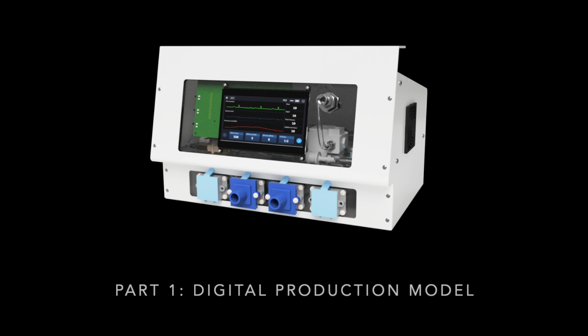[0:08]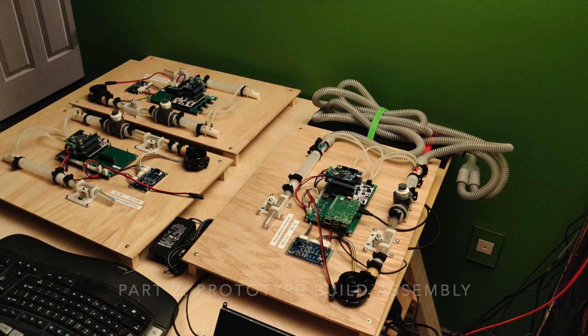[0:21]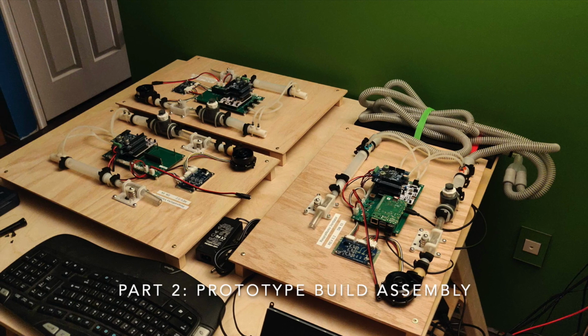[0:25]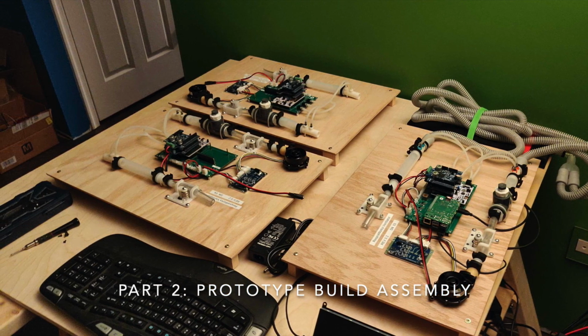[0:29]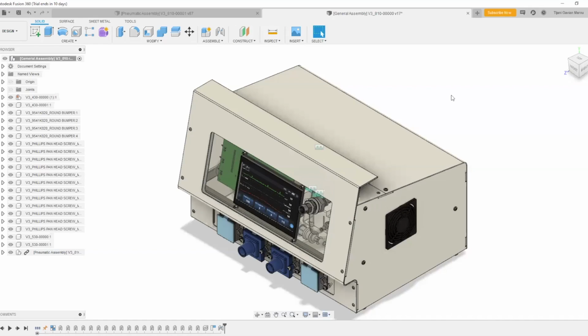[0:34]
In this video, we'll first be walking through a digital model of the production ventilator assembly, which is the complete package that we'd expect to put in a hospital environment. In this part, Tajani will explain some of the assembly and packaging considerations. Then, we'll walk through the assembly of a development prototype, which contains all of the functional components in a layout that's easy to work with, which we use to allow our distributed development team to work on building controls for the device. Our design philosophy was centered on ease of assembly, installation, and maintenance.
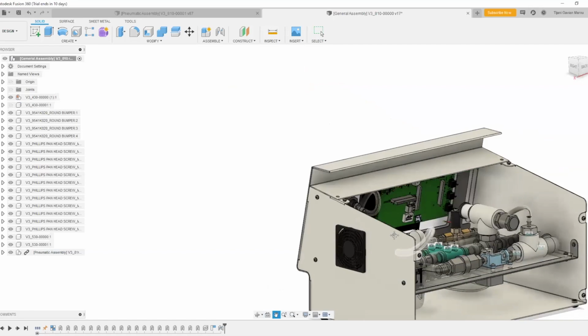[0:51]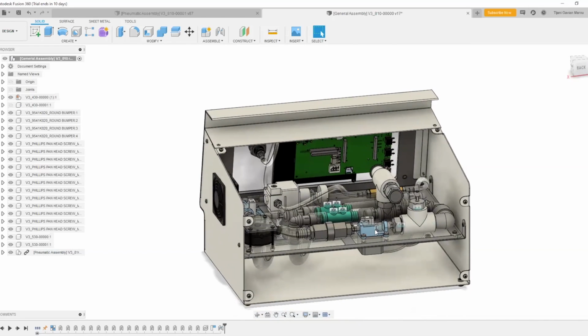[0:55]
We wanted the ventilator to be as modular as possible. All of the ventilator's internals are mounted to a frame that can be removed as one piece. In fact, the entire functional unit can be assembled outside of the enclosure. The enclosure was also designed around maintenance, with removable panels allowing access from all sides. The internal assembly can be seen here.
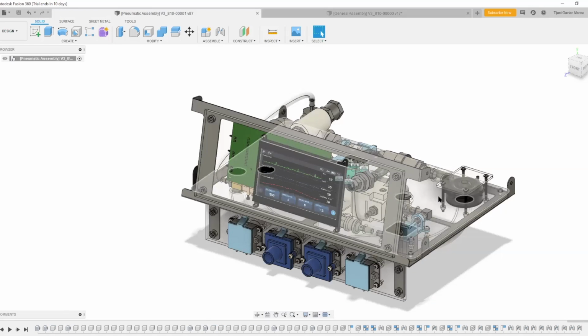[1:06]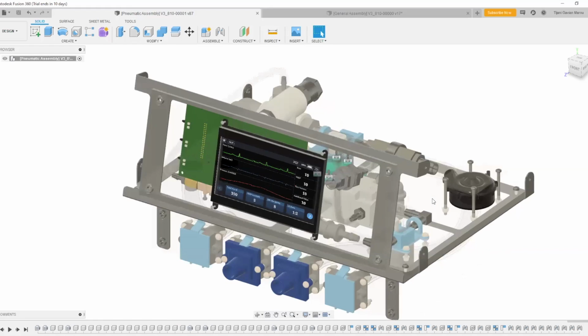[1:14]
The internal assembly was designed to be as simple and tidy as possible. Tubing was eliminated wherever possible and replaced with fittings. Clear acrylic supports components mounted to a sheet metal frame. This allows for higher visibility during assembly, as well as easy troubleshooting of moving components while enclosed. In this model, wiring and pressure measurement tubing are not shown for visibility.
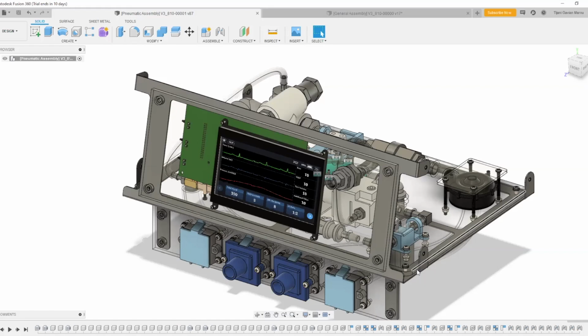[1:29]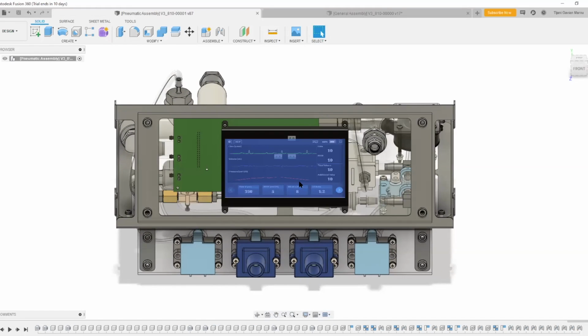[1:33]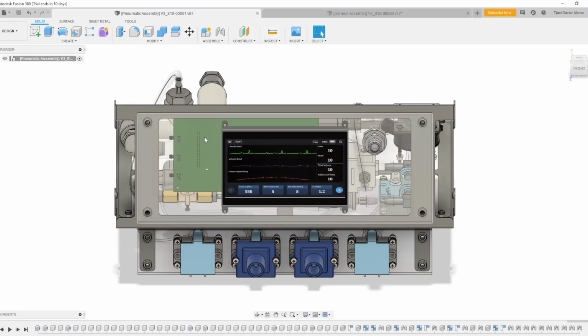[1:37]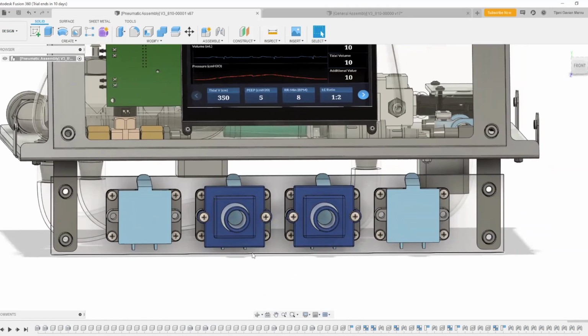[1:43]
The display screen and oxygen connections are located on the upper panel. The brains of the unit and motor stepper drivers mount to the back. The lower faceplate supports the filter and patient tubing connections. These are actually the same part, the only difference being the removal or addition of the patient adapter.
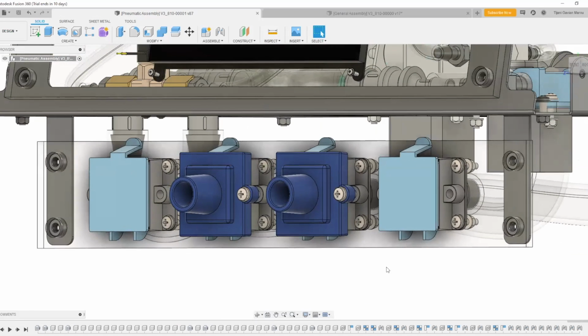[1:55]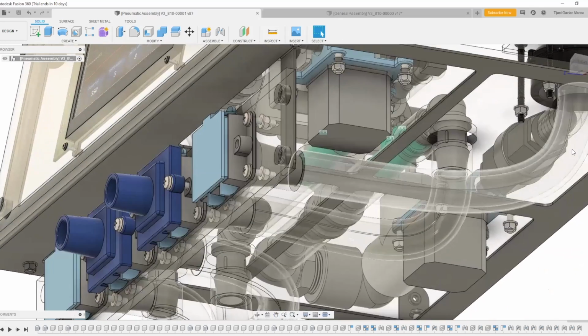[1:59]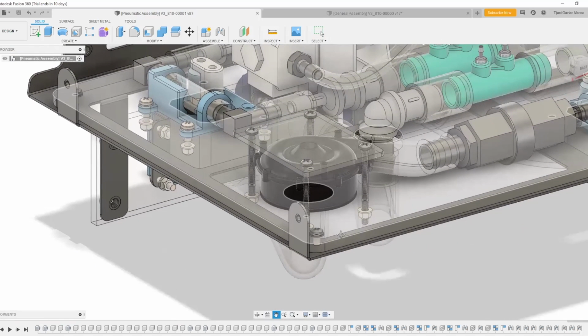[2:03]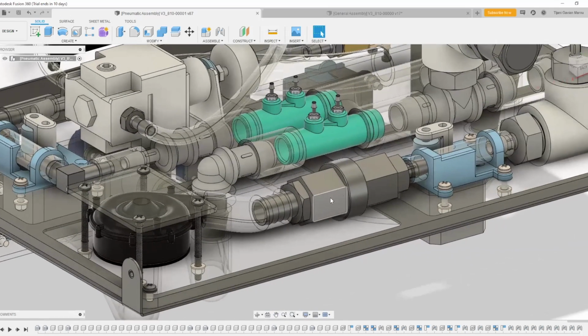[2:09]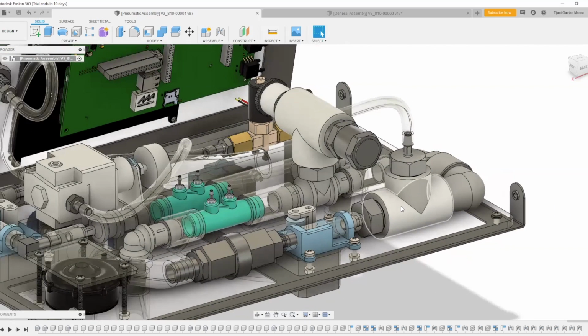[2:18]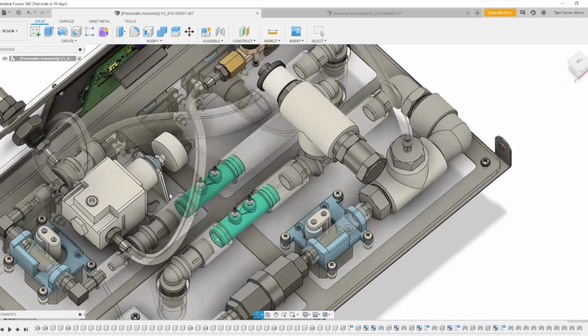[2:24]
Starting at the intake filter, flexible tubing routes air to the blower. The discharge air then travels through a check valve to prevent high-pressure O2 traveling back to the blower. Stepper-driven pinch valves control flow, which is then mixed with O2 in the mixing tee. The supplied O2 can be regulated through our regulator, if necessary, and is controlled by a proportional solenoid before mixing. An oxygen sensor feeds the control board information, and a pressure relief valve is here for safety.
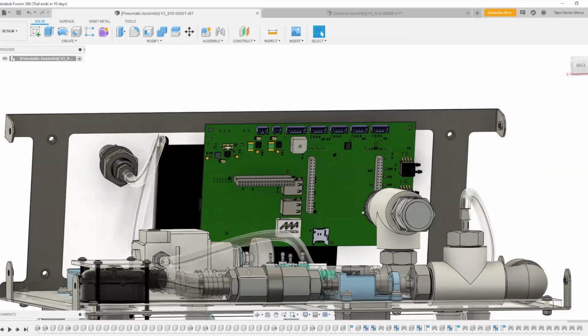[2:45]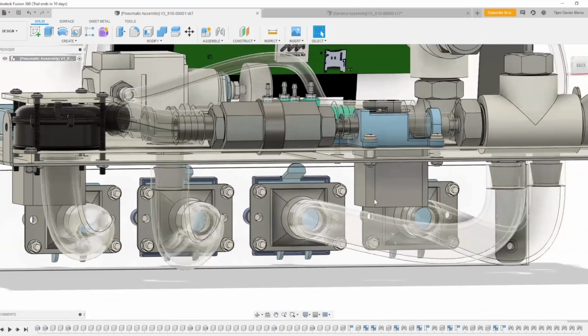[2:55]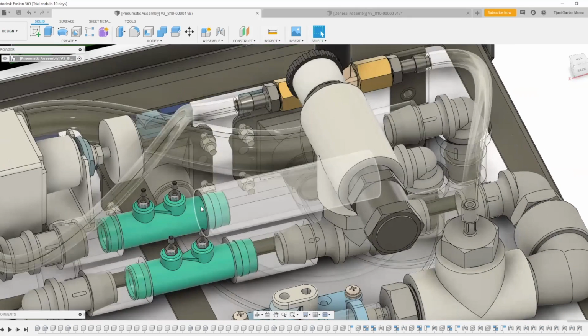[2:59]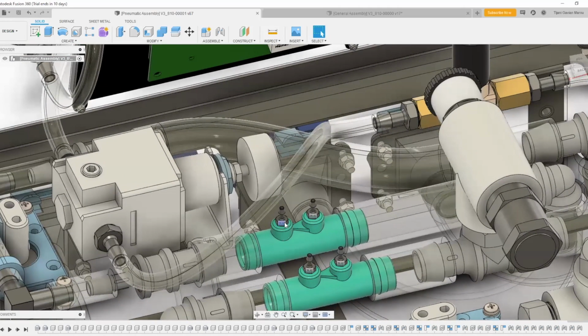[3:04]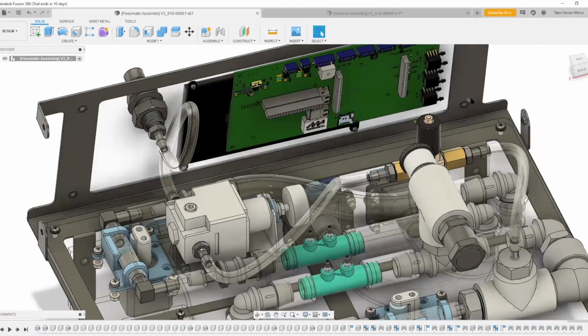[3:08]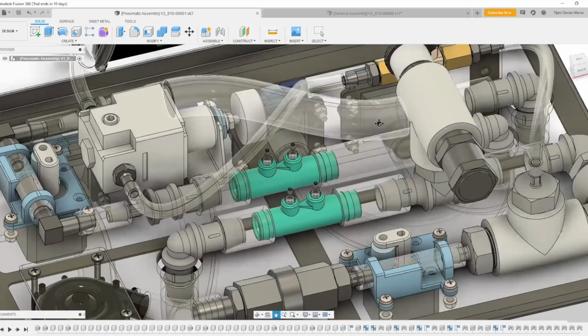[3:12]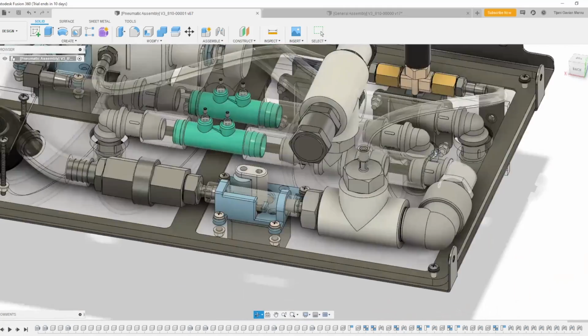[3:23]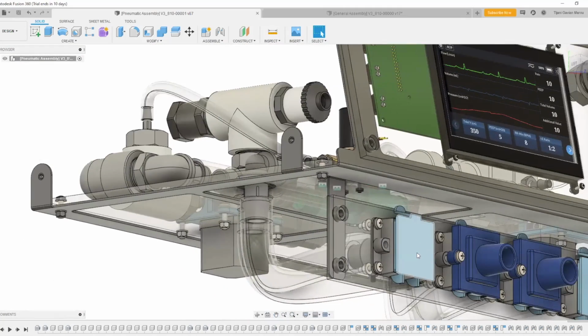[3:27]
The air-O2 mix then passes through a Venturi flow meter before exiting the ventilator through the inhalation connection. Exhaled air from the patient returns through the exhalation connection, comes up to the top of the board, and through another Venturi flow meter for measurement. The pressure tubing for the Venturi flow meters mounts to these barbs here and connects to the circuit barb up here. After the Venturi, the air passes through another control valve before exiting through the exhalation filter here.
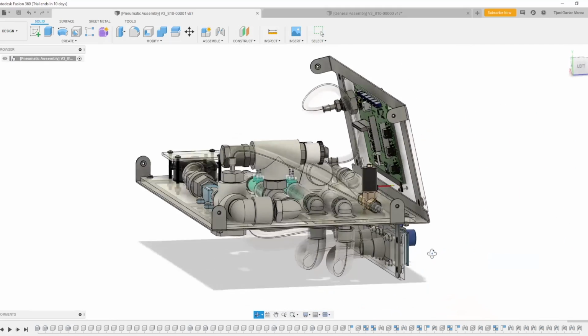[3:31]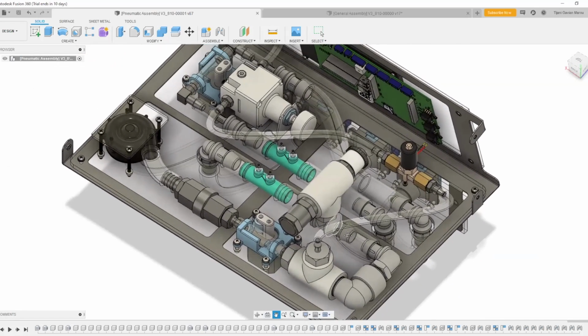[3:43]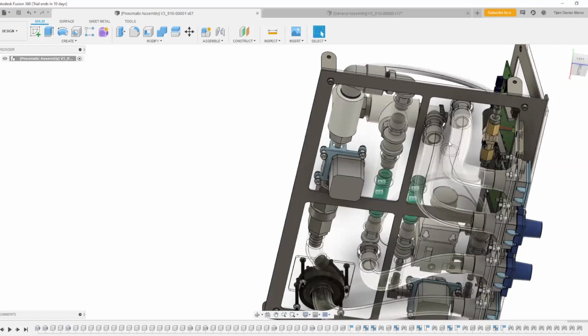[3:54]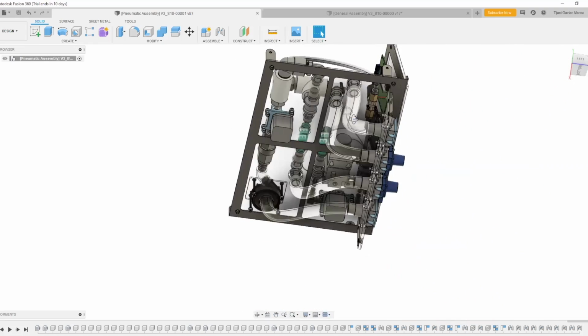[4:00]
The design philosophy behind separating the upper and lower decks of the mounting plate is centered around the idea that we wanted all of our components up above with as many fittings as possible, to reduce the amount of tube spaghetti, and also for visibility reasons. In case there's any issue, the operator can look through the faceplate to see if something has become disconnected or if a mechanical device is not operating properly. The lower deck was reserved simply for tubing, to not violate minimum bend radii and also allow for a somewhat neater interface.
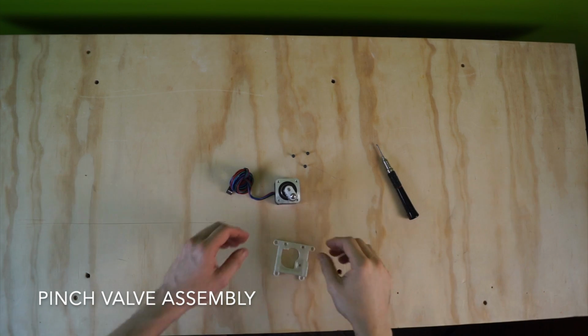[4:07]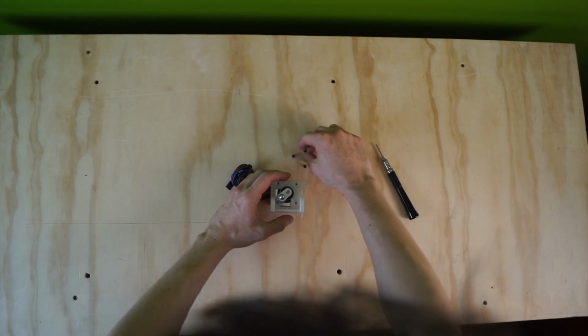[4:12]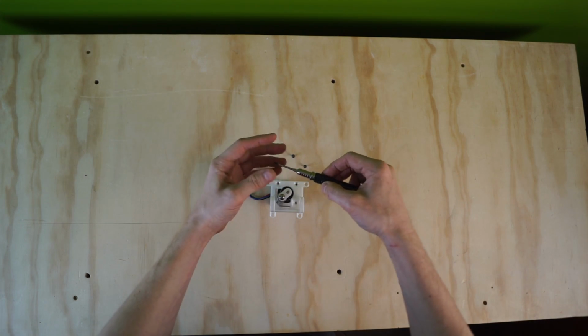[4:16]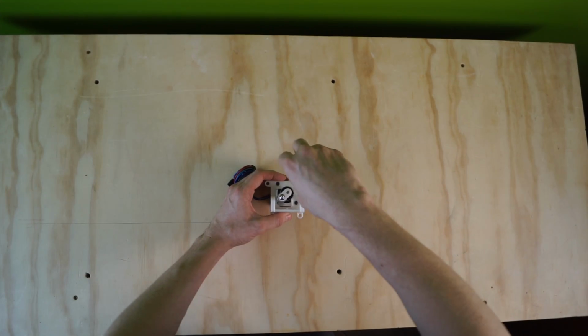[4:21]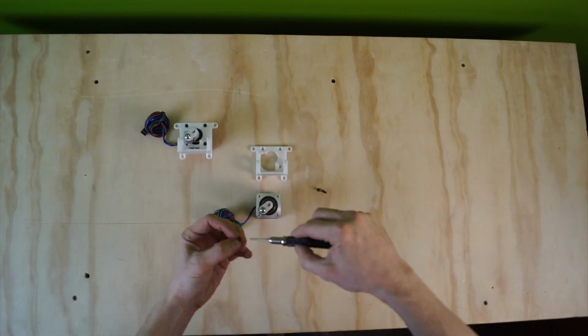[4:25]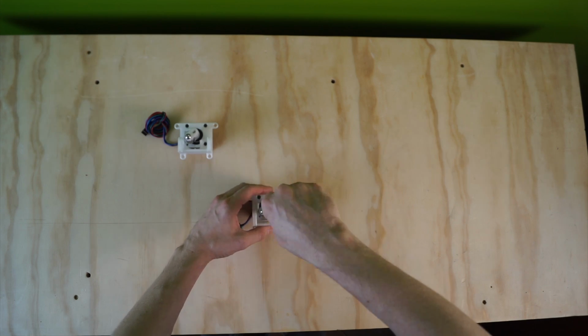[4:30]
This completes the demo of our production ventilator design. Next, Martin will walk us through the assembly of a development prototype ventilator. Documentation of this process is publicly available as part of our open source philosophy. We'll start with the assembly of the pinch valves from 3D printed components and off-the-shelf hardware. With this subassembly complete, we'll move on to the main ventilator pneumatic circuit.
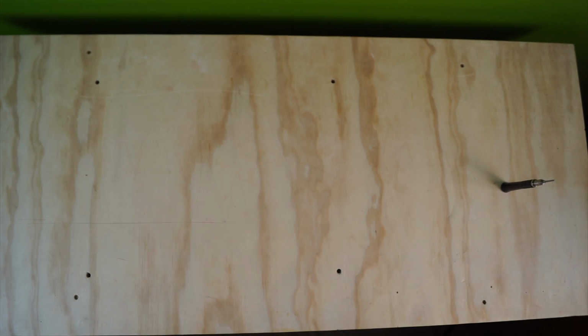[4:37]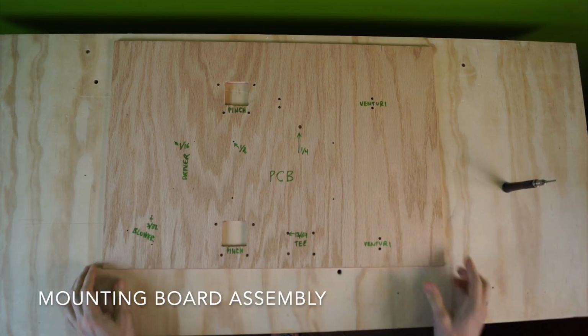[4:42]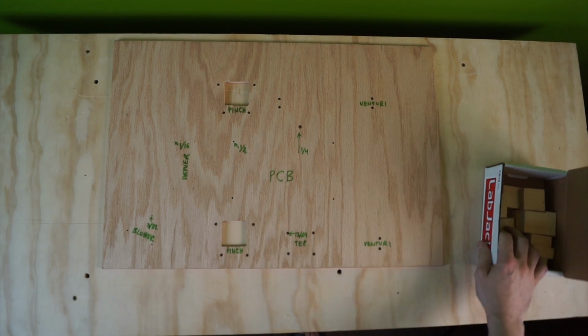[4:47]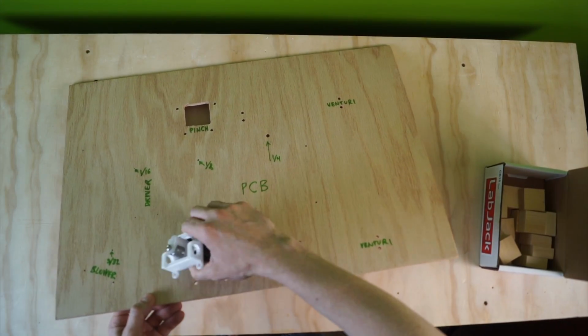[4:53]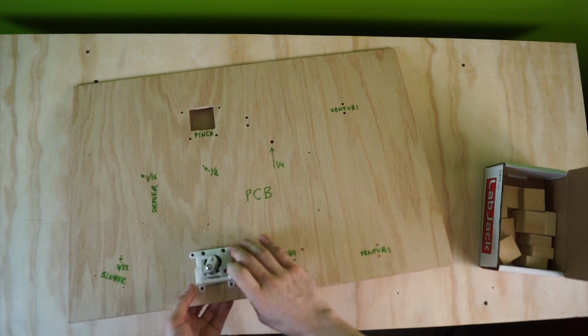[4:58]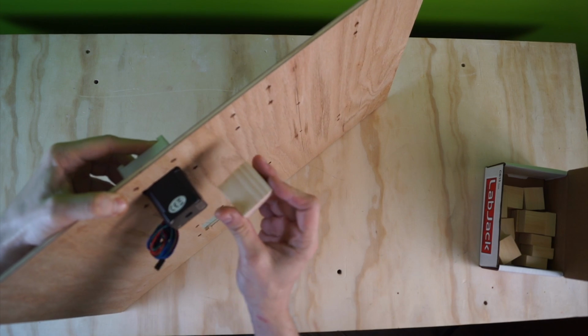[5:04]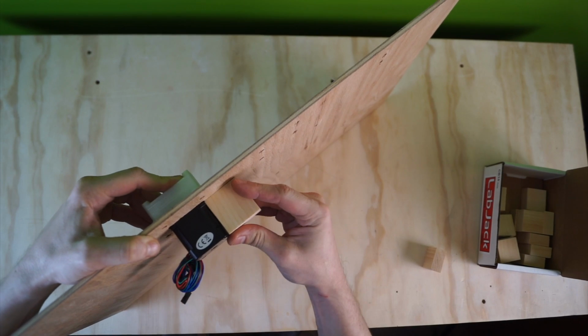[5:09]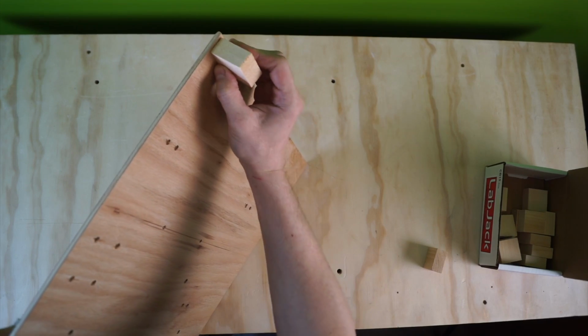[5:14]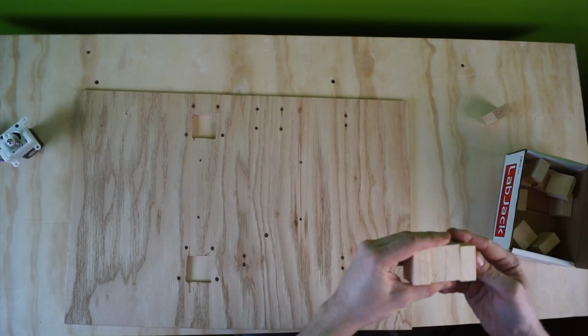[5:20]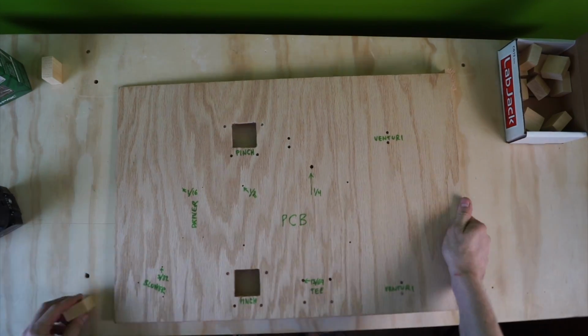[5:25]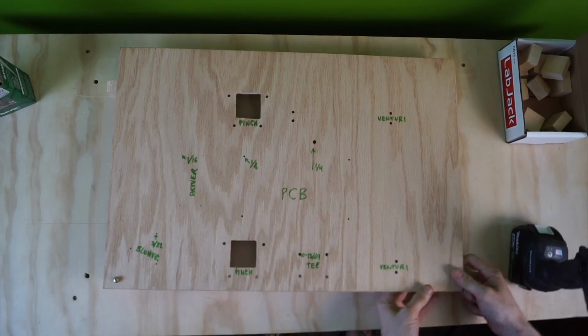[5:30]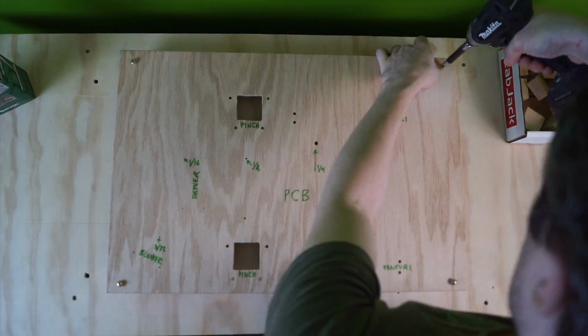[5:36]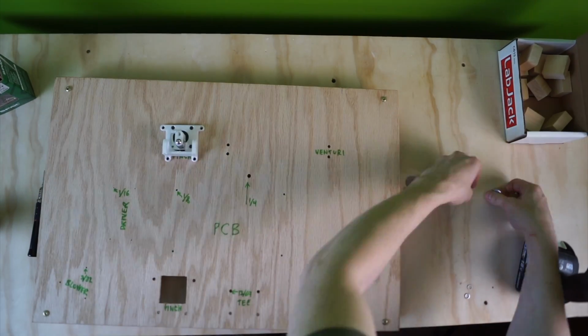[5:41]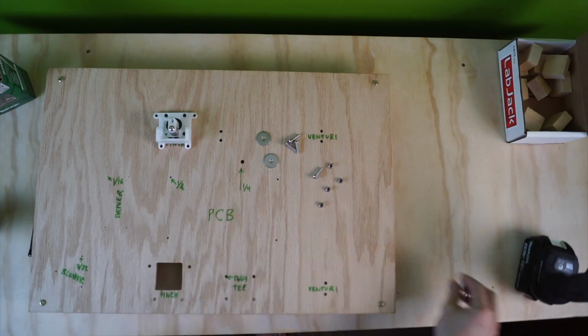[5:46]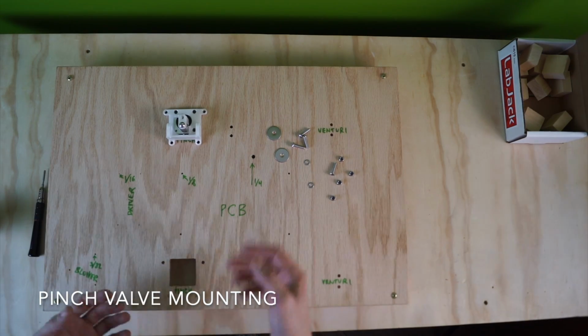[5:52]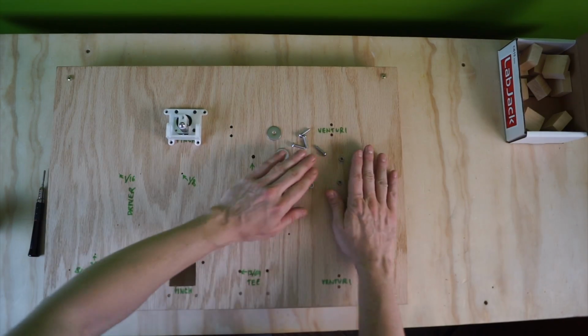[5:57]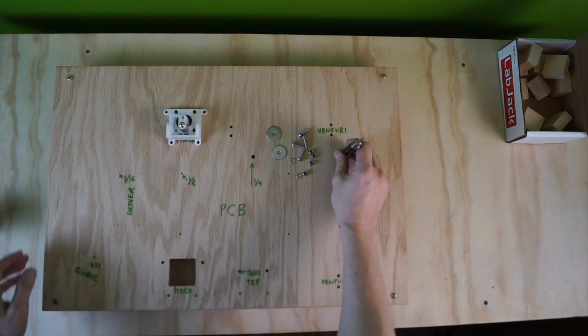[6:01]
So, the parts. Here's the parts. The tools. Here's the tools.
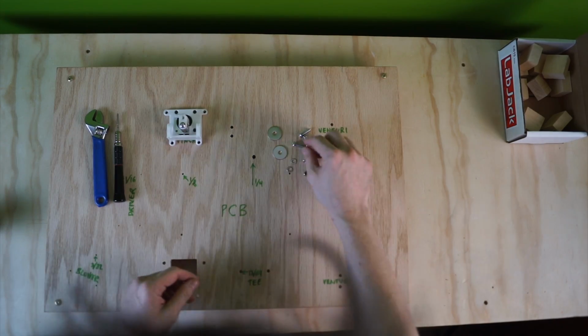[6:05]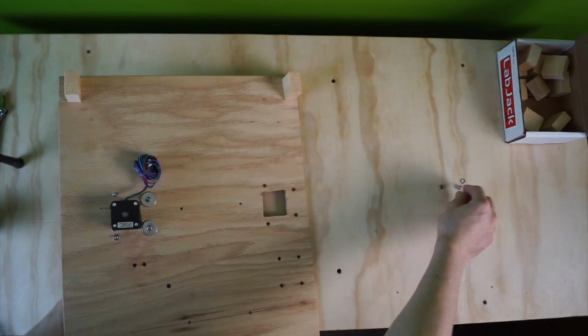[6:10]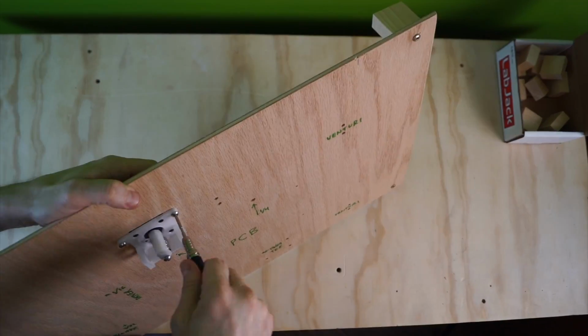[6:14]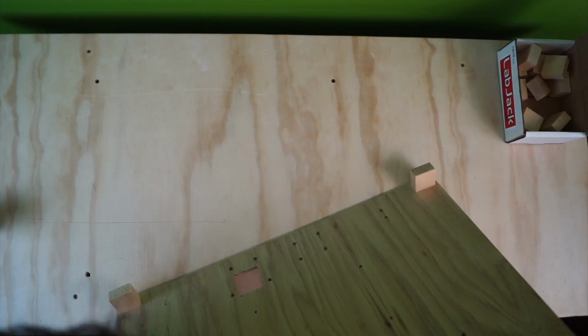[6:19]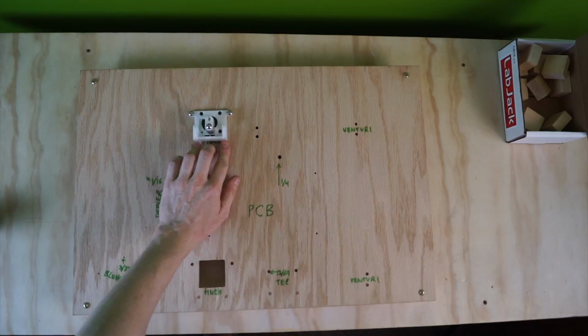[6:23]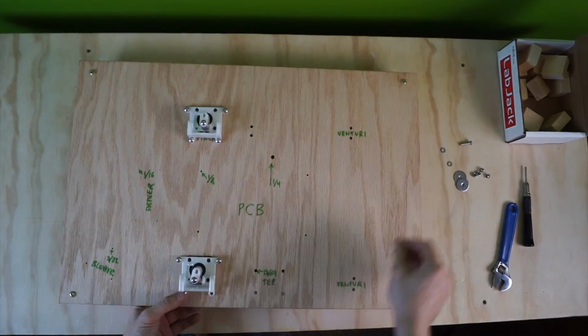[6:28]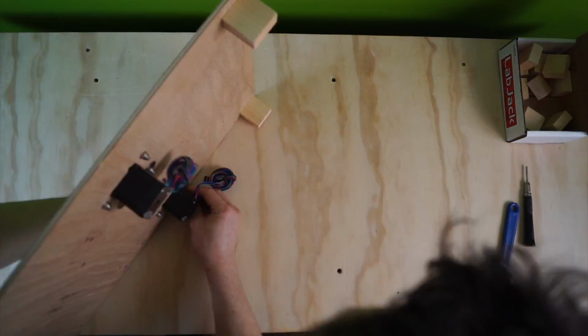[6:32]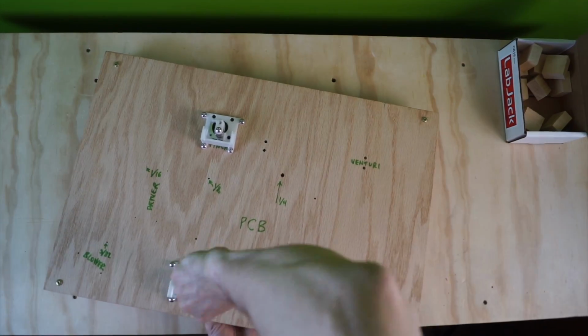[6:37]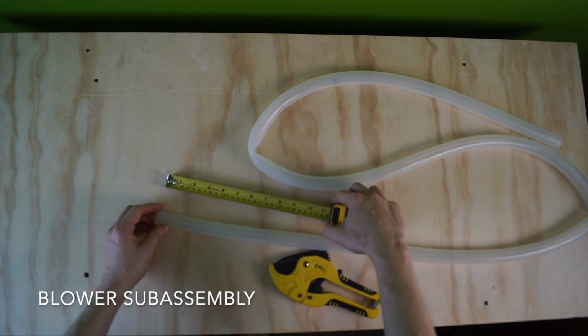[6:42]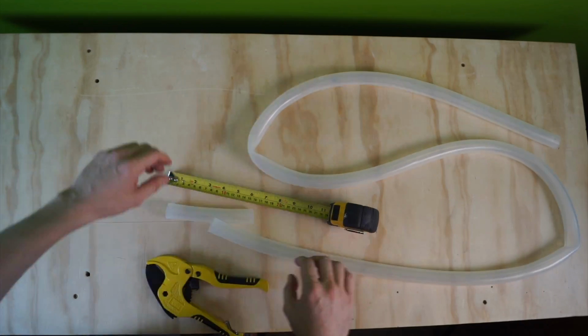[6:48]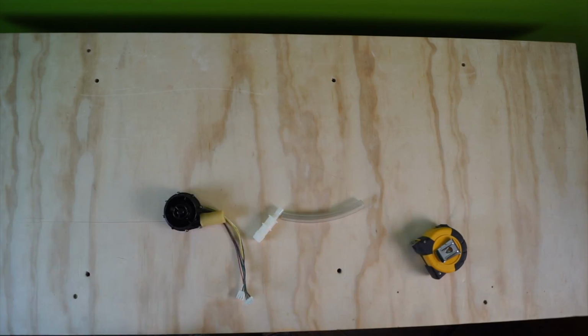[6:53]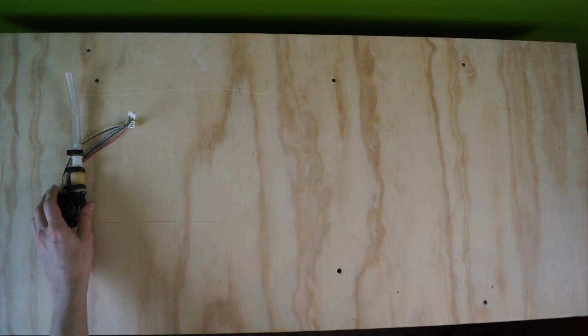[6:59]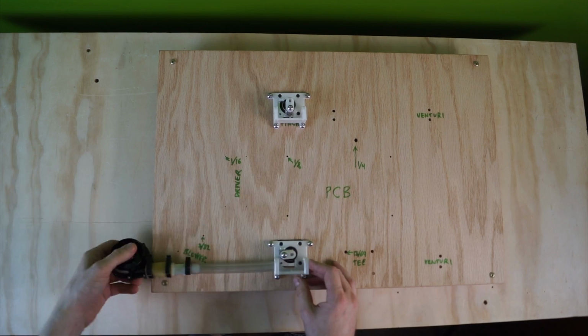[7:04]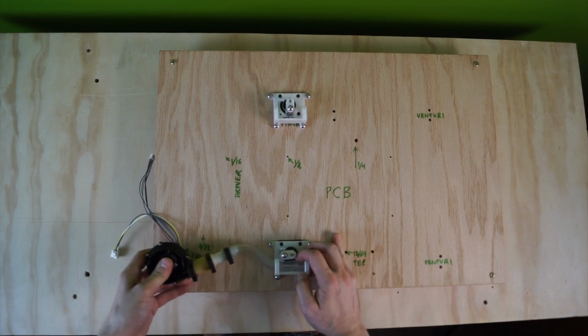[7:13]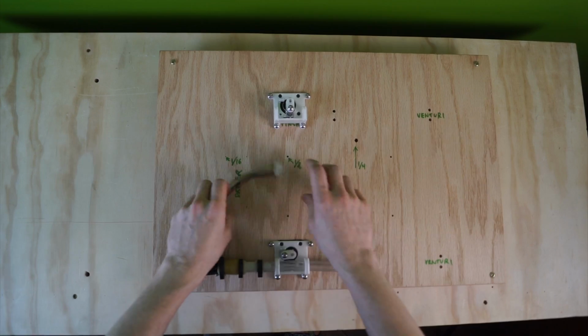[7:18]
The mounted pinch valves form the start of the pneumatic circuit. Next, we'll build the blower subassembly, which is the inlet to the pneumatic circuit. We have drilled these 3/32 holes here for attaching the blower.
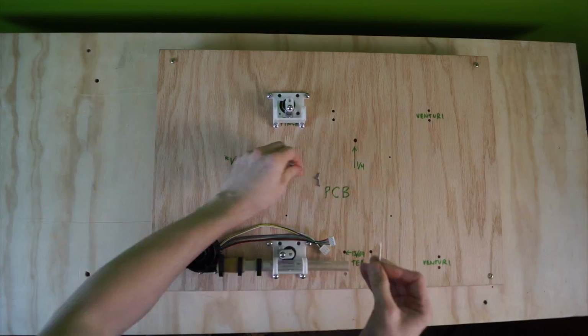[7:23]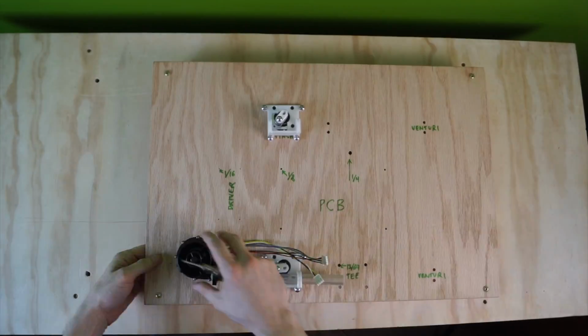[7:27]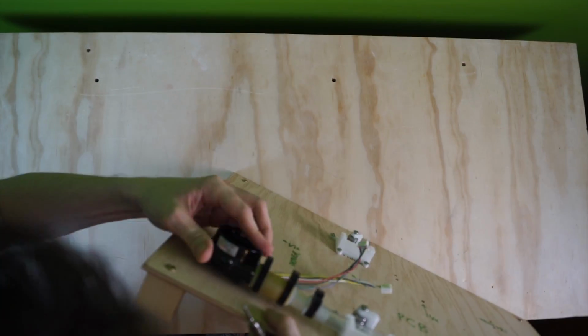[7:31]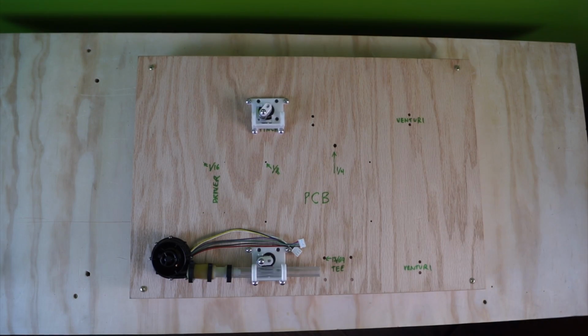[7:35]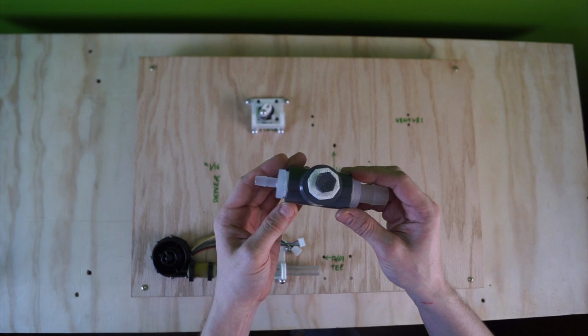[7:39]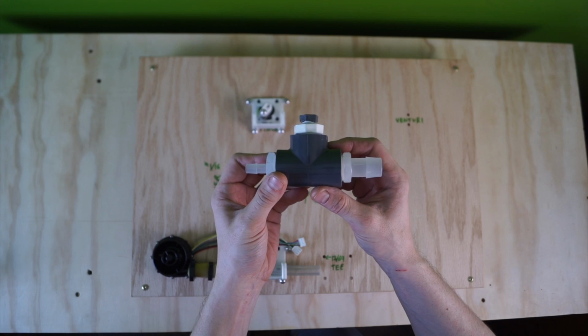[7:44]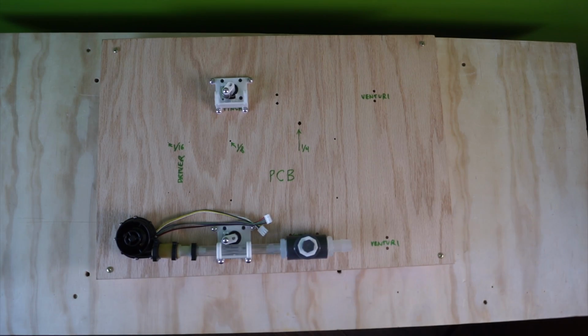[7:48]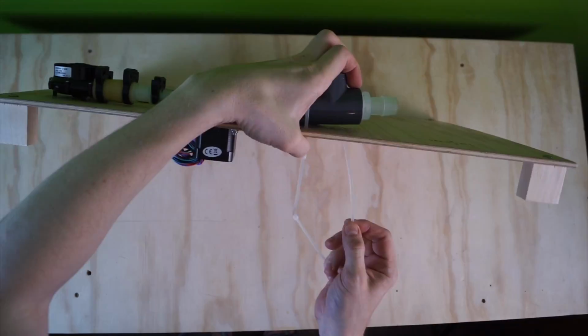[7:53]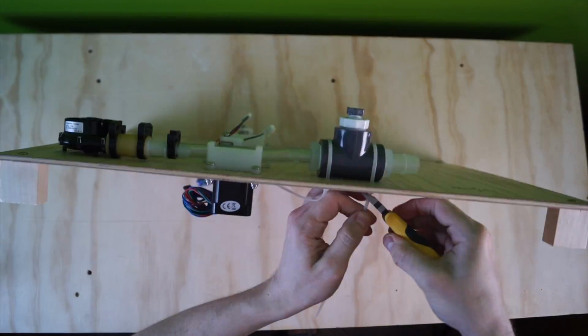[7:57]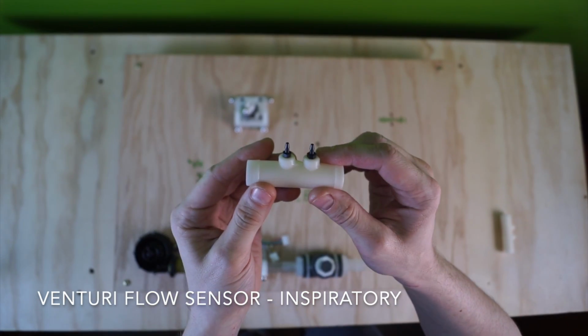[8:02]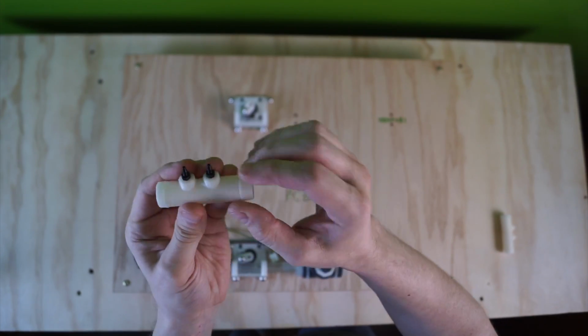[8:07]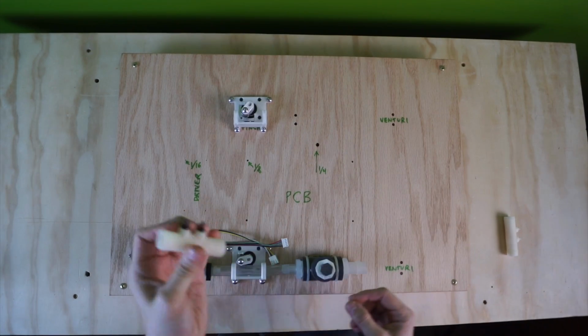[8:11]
Next, we add the T for an overpressure relief valve. In this demo, a plug fitting is standing in for the actual valve. The Venturi flow sensors are custom parts, which are 3D printed for these prototypes. They allow us to measure pressure drop and derive the flow rate through the orifice. That's where the tubes are going to connect.
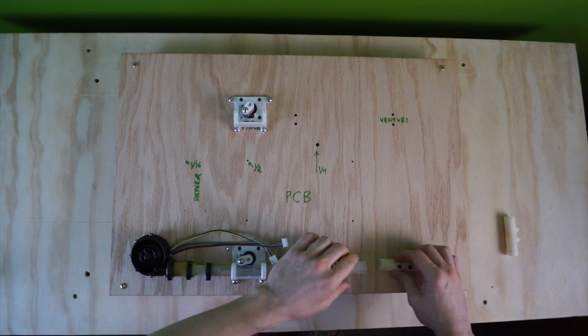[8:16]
Everything is tubes. The internet is tubes. It's just a series of tubes, man.
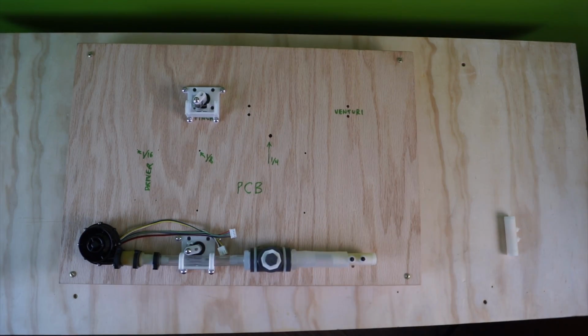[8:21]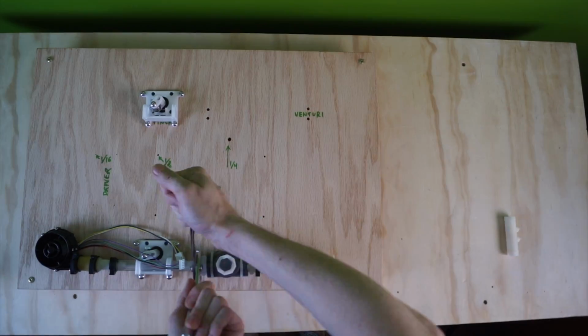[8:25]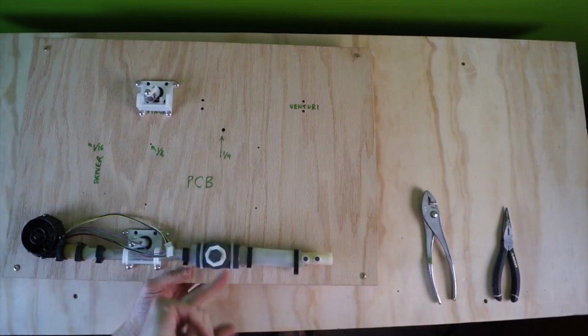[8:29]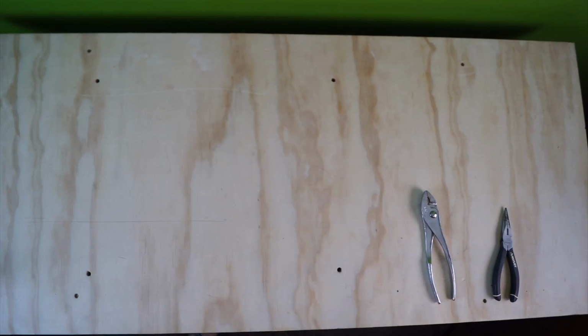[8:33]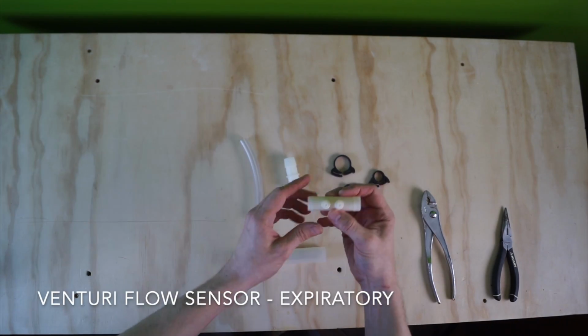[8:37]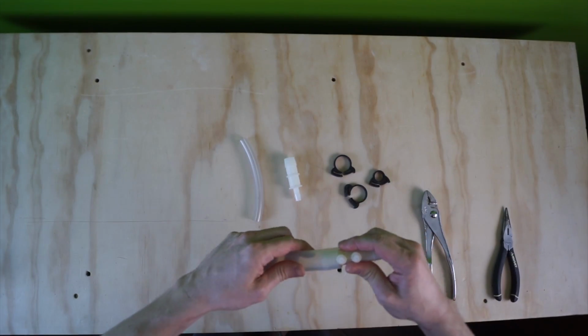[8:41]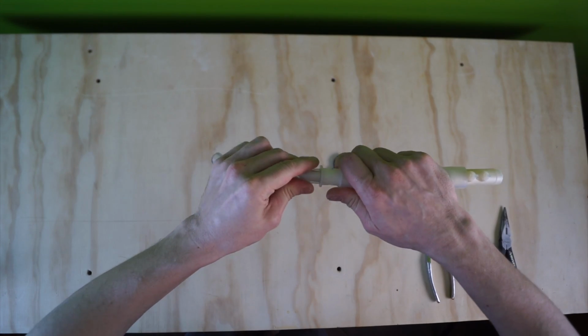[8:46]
We'll do the subassembly first. So Venturi comes in. Arrow is pointing that way. And that's the tubing for the second pinch valve.
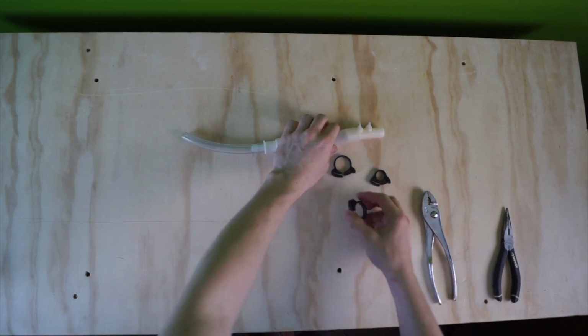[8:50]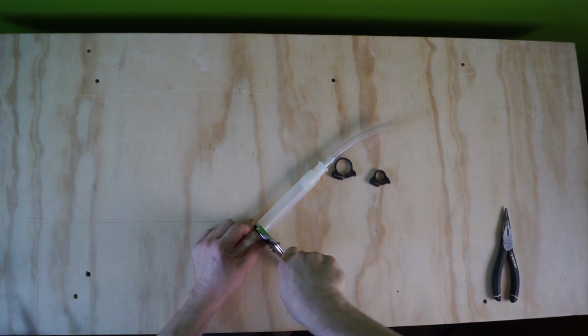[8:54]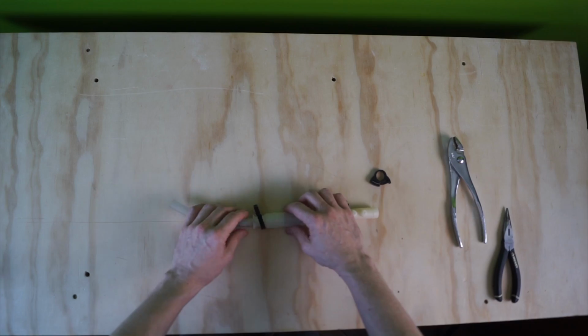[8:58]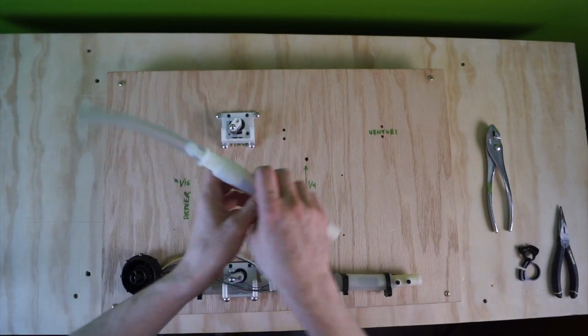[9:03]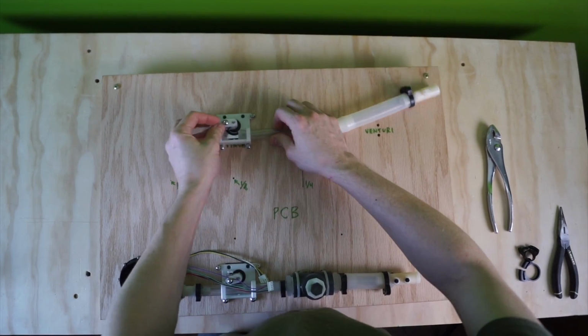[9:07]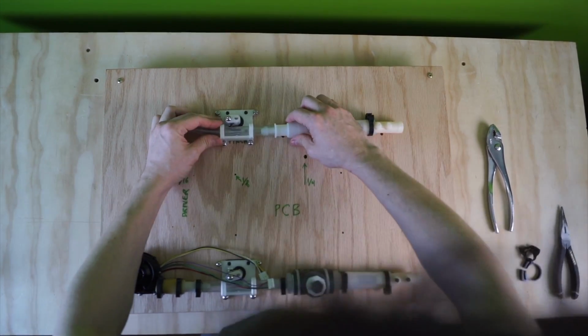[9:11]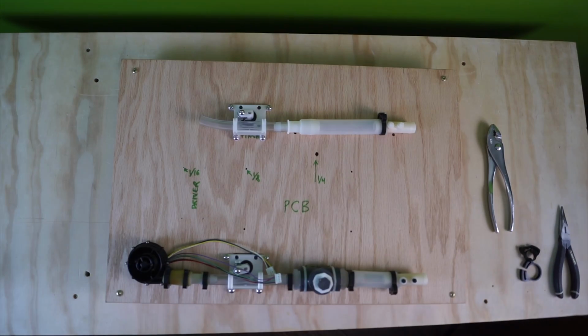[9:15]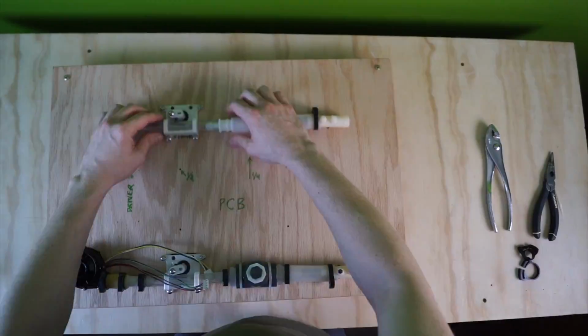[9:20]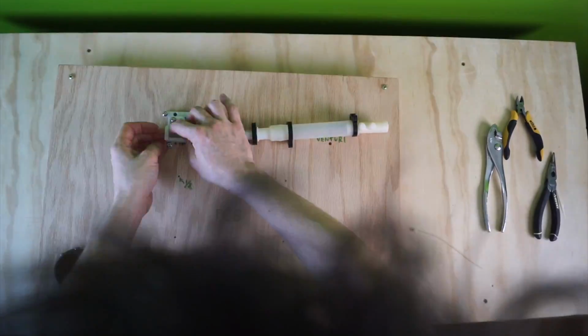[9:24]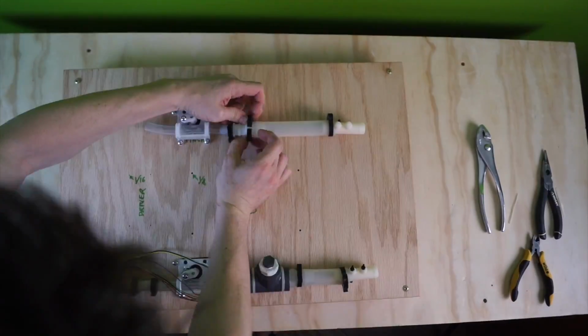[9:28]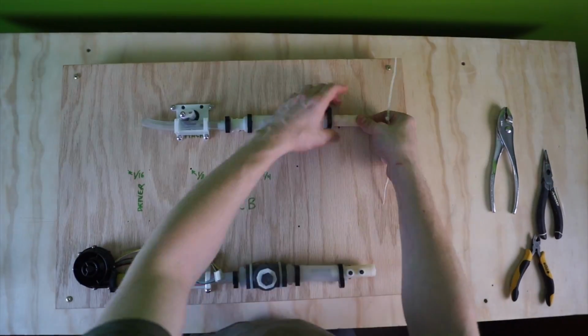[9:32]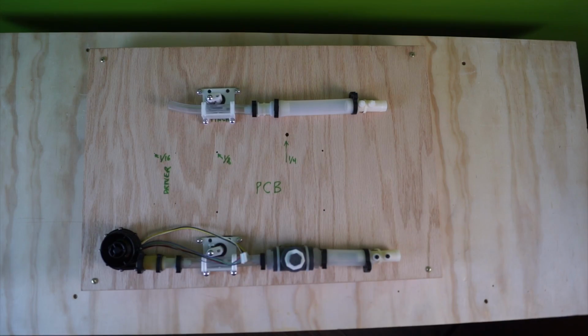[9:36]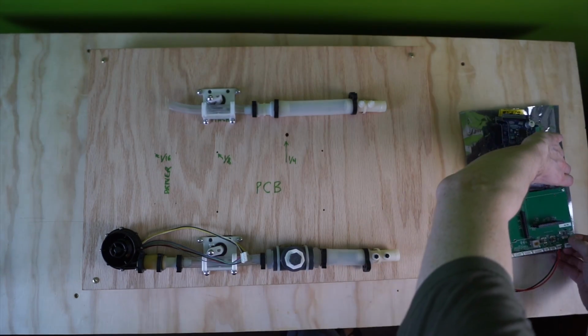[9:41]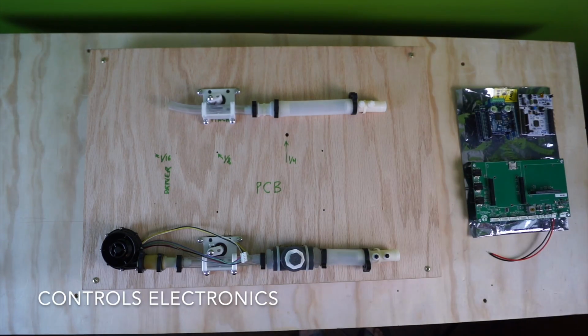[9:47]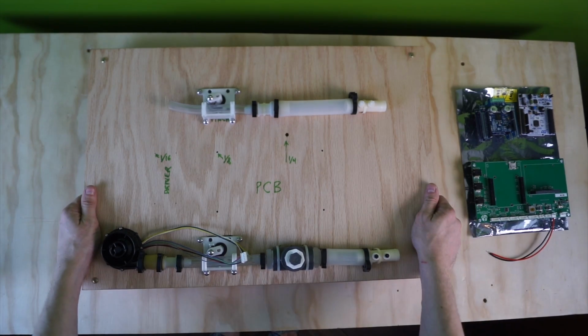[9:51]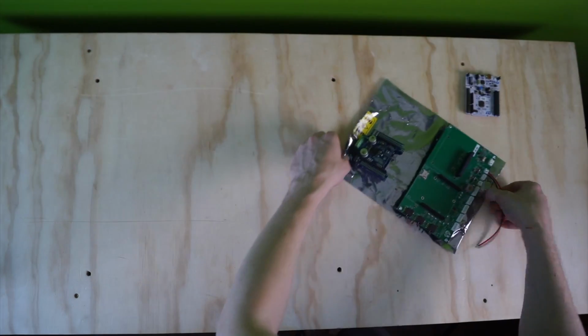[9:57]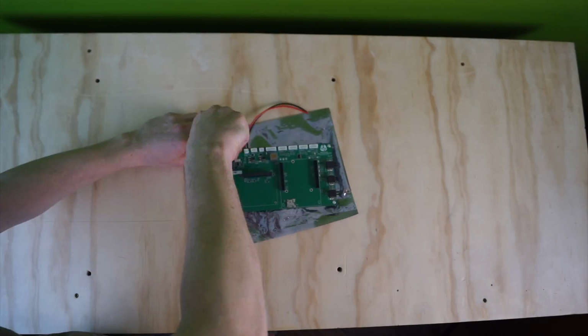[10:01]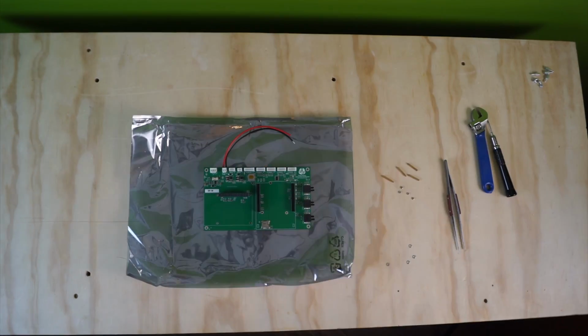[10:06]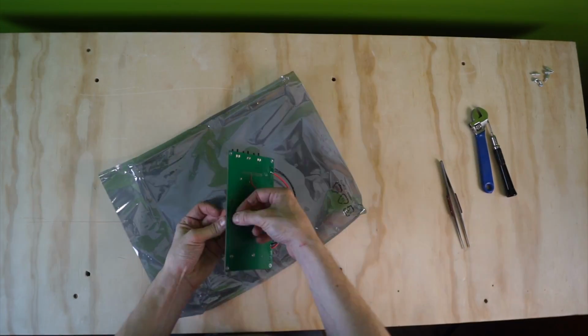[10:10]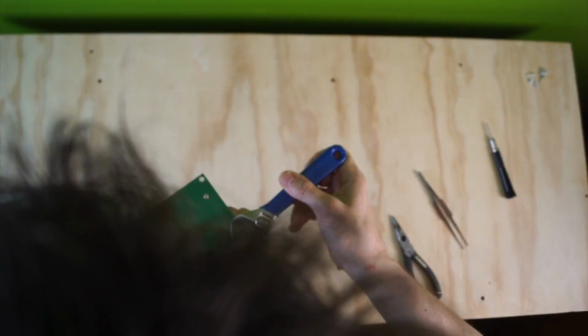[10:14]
Here's all the electronics, but we need to prepare them first. RespiraWorks has created a custom PCB to minimize production errors for the control system. Here, Martin is modifying its mounting for the development prototype. The board links the Nucleo controller, pinch valve stepper motor drivers, blower driver, sensor inputs, and touchscreen controller.
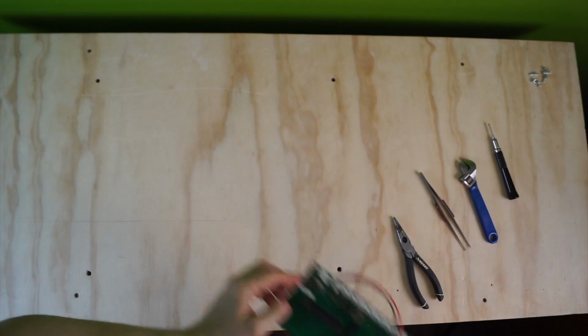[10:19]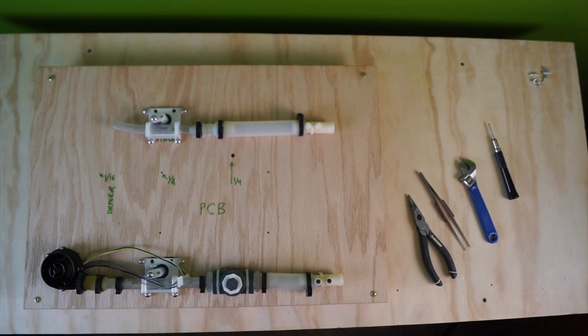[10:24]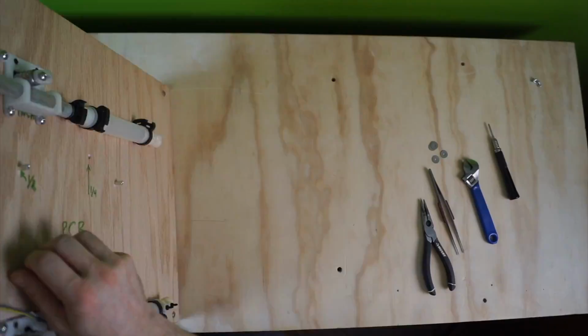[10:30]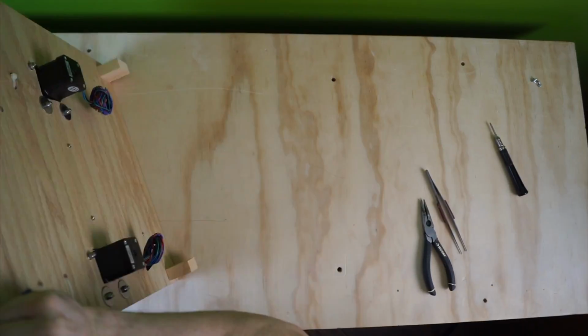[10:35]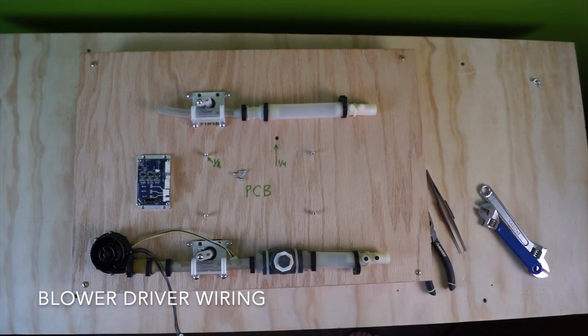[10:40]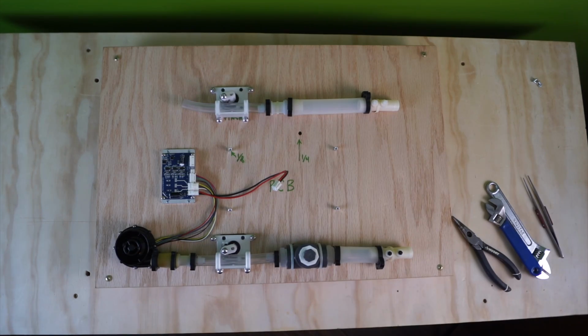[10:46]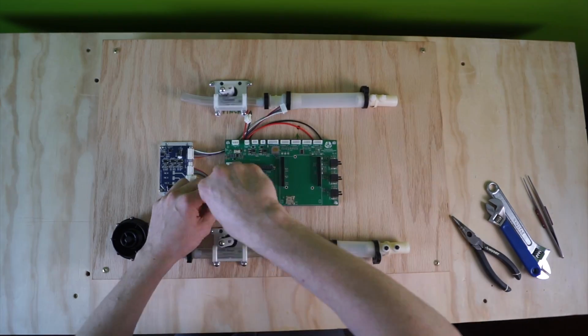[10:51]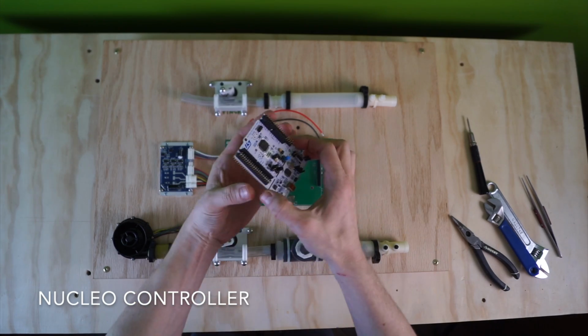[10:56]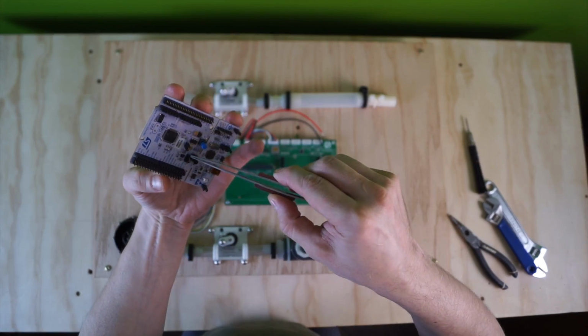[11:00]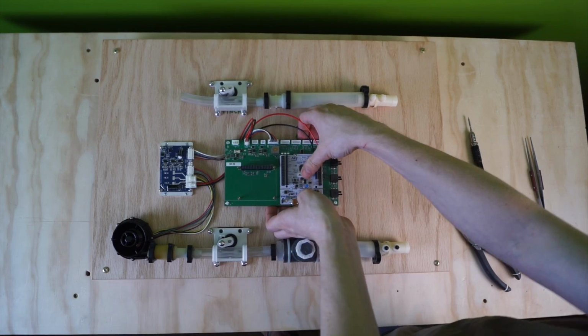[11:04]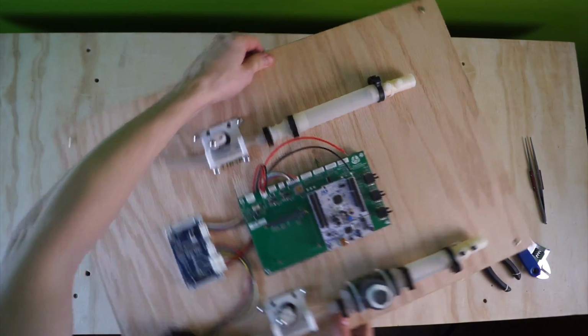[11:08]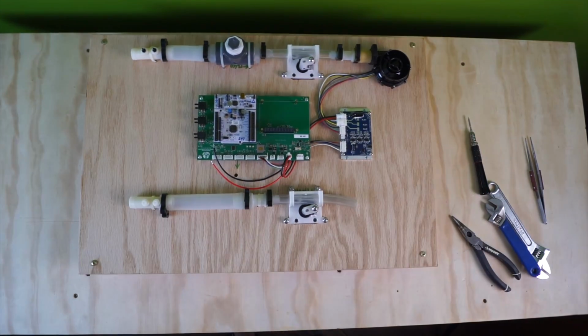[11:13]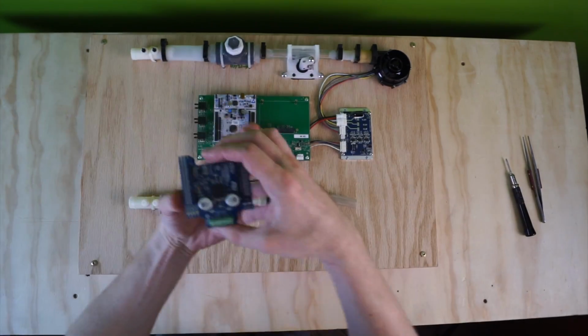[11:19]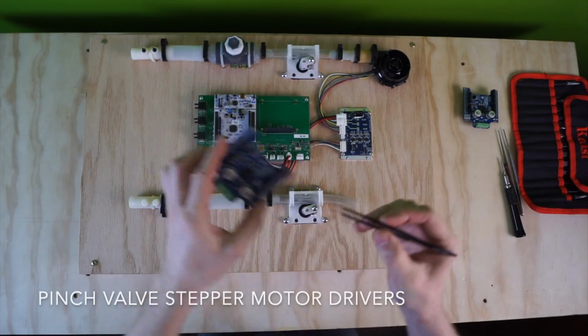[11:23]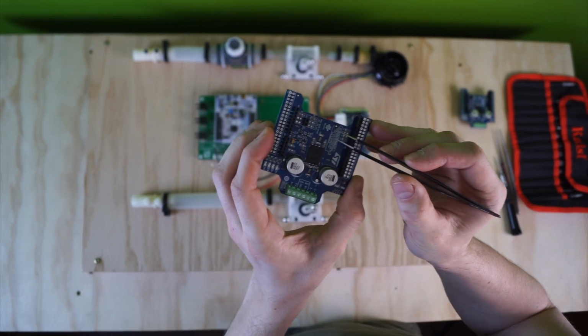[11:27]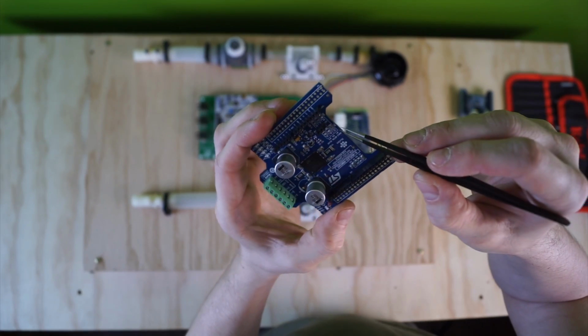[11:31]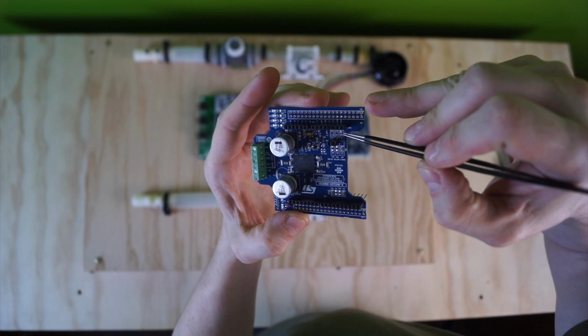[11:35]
Here comes the Nucleo. On this board, we've re-soldered this resistor to this position. This means this is the bottom board of the two.
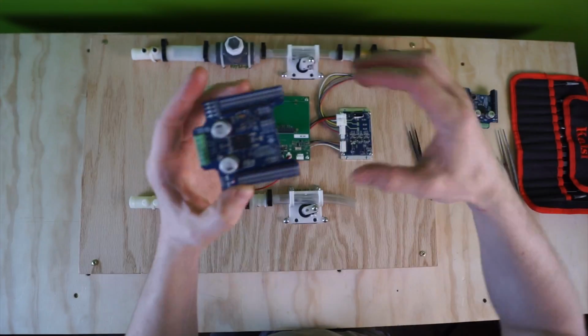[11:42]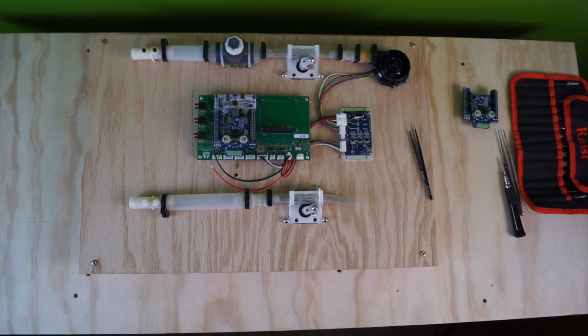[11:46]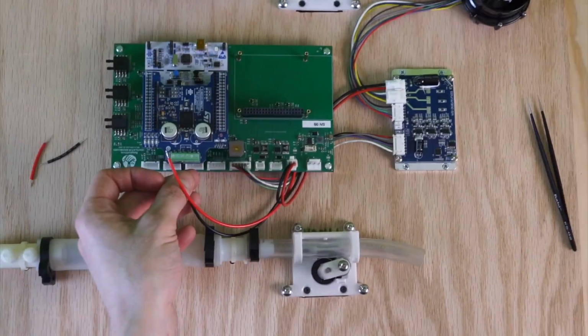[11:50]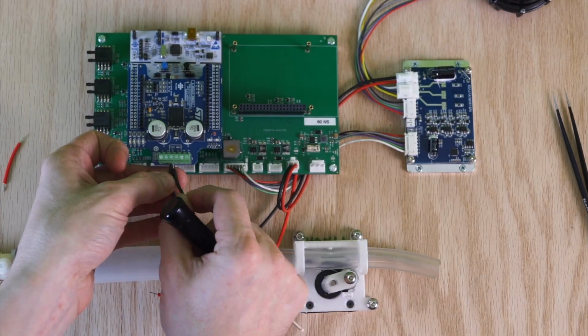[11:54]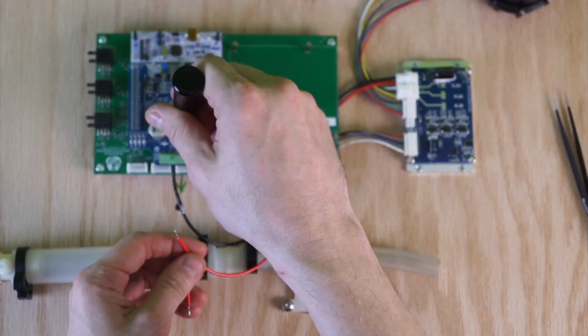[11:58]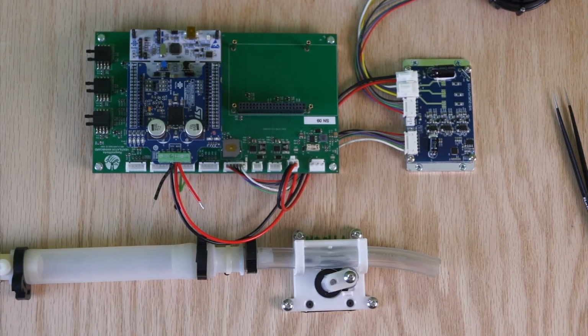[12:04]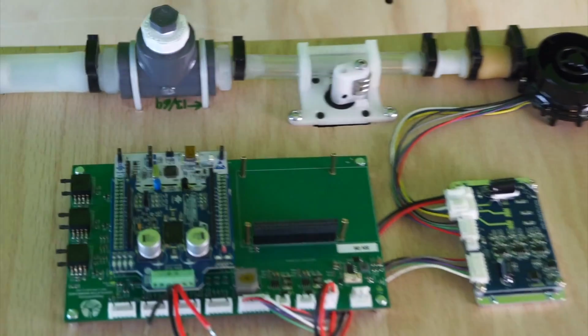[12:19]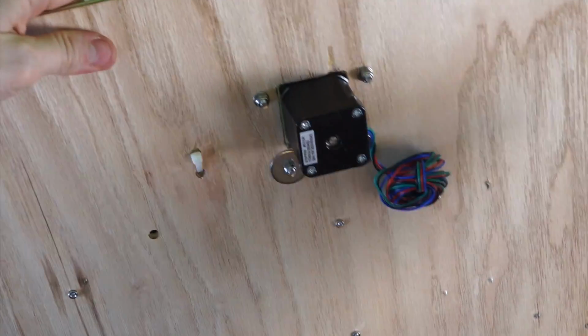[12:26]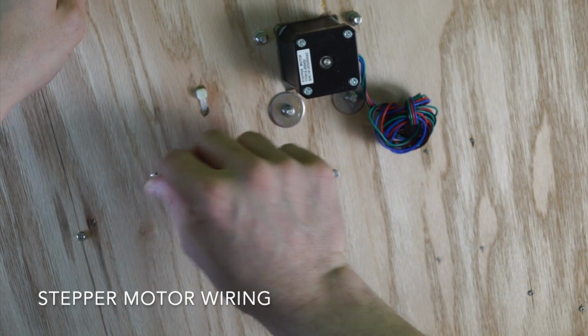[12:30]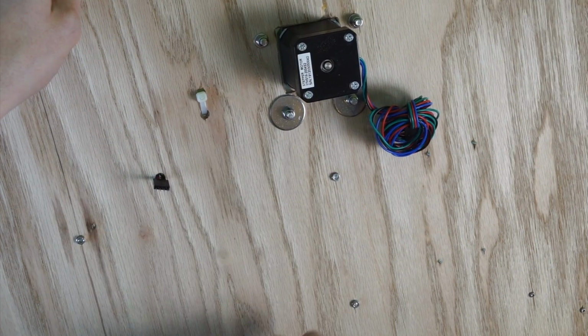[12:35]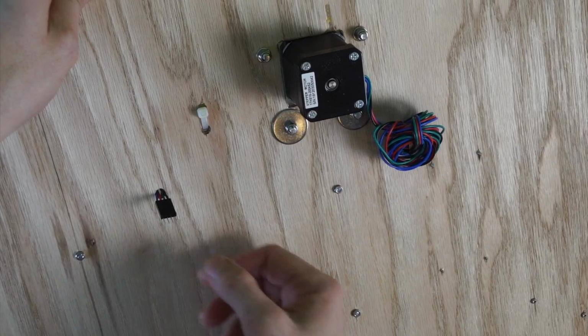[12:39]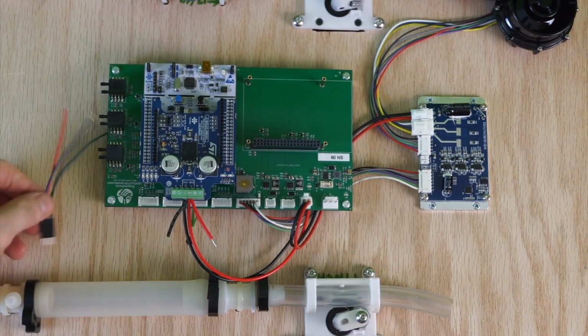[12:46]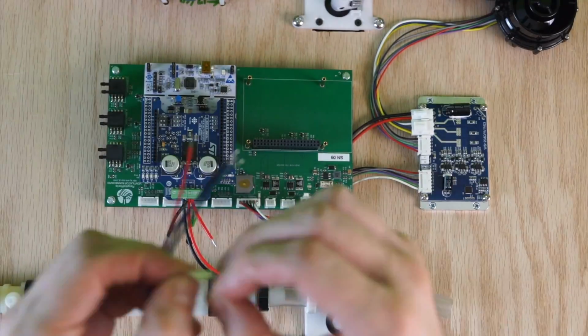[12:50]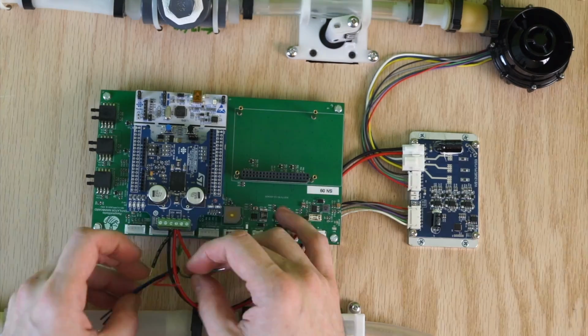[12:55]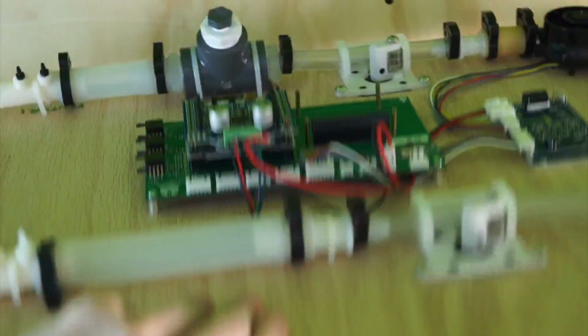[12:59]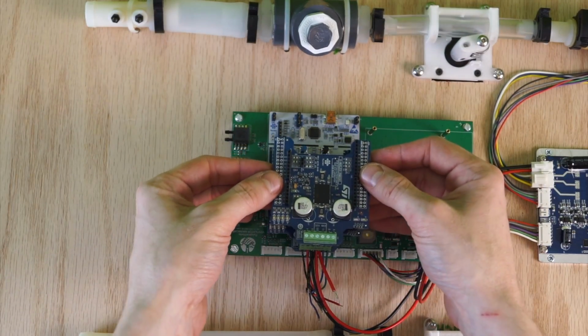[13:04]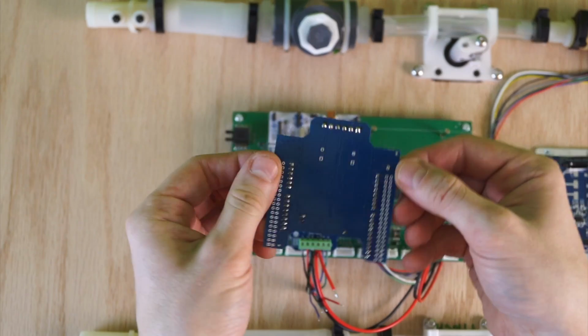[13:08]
Now, before we put the second board on, we'll want to run one of these out to the back so you can connect to the steppers. So that's what that big hole was for. Just going to run this connector through. But actually, before I do that, I'm going to label this. Making sure the pins are straight.
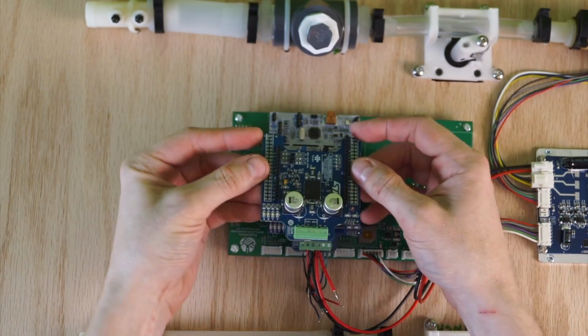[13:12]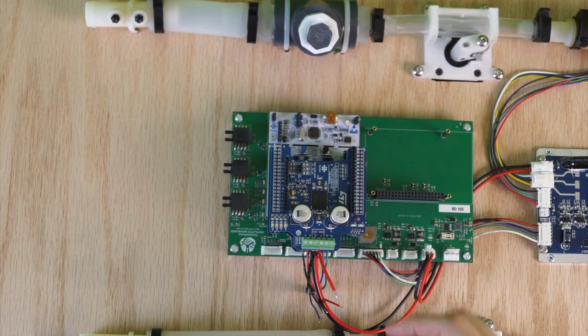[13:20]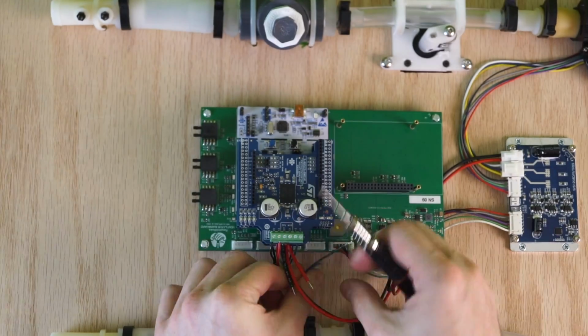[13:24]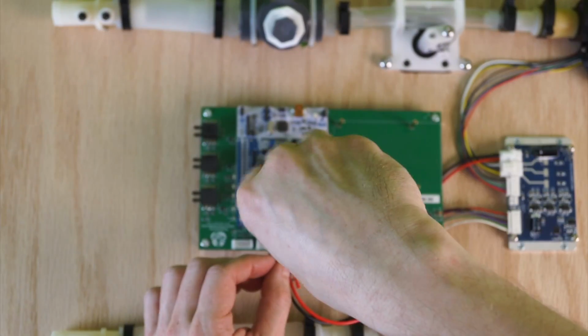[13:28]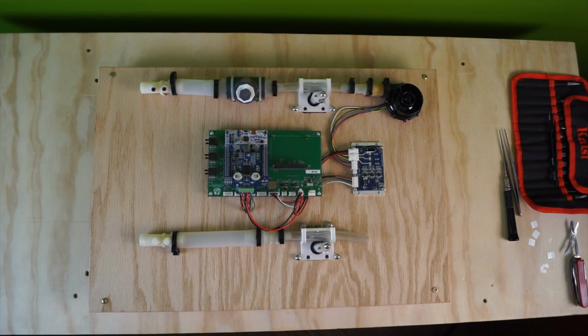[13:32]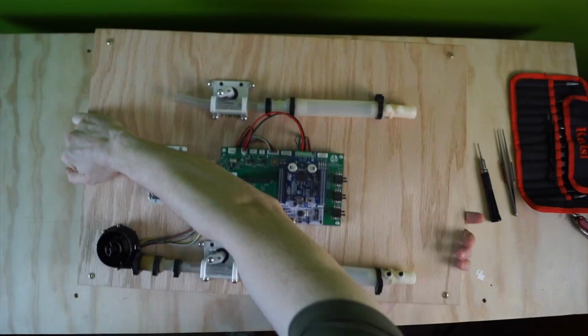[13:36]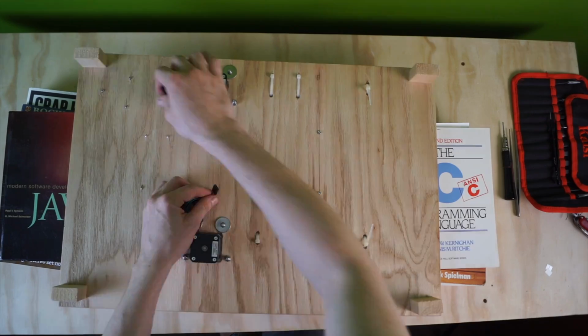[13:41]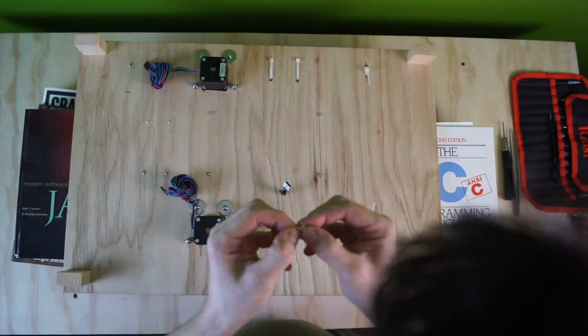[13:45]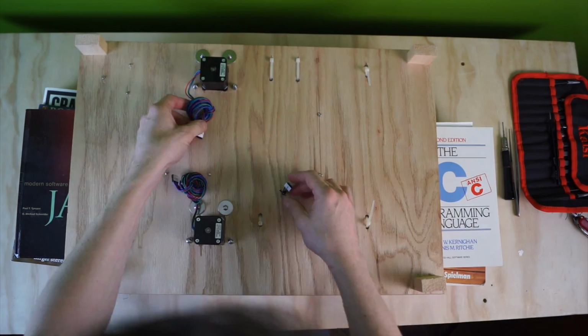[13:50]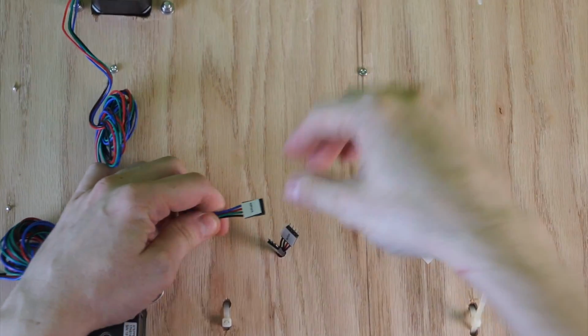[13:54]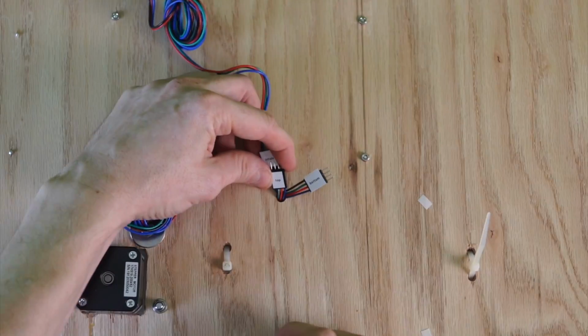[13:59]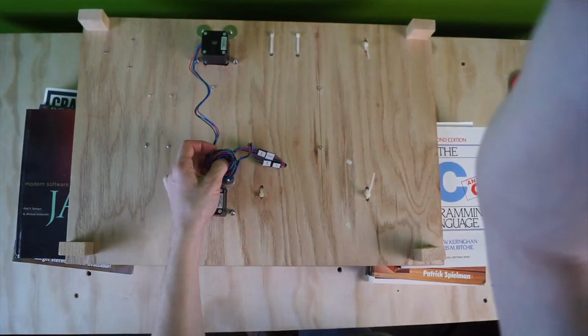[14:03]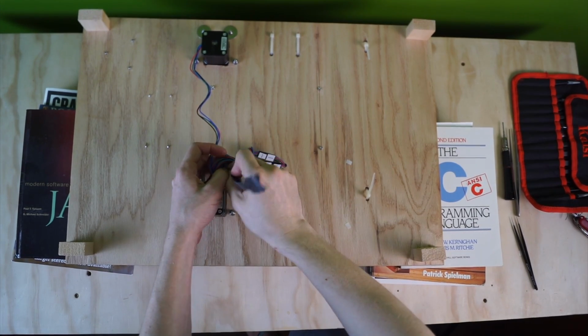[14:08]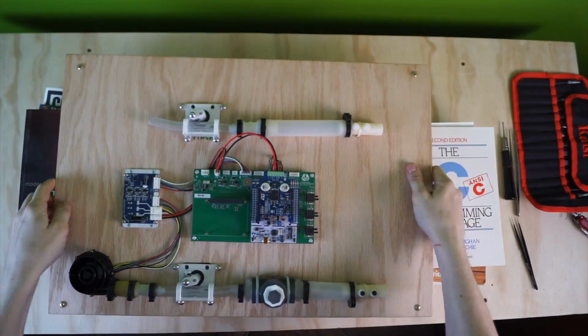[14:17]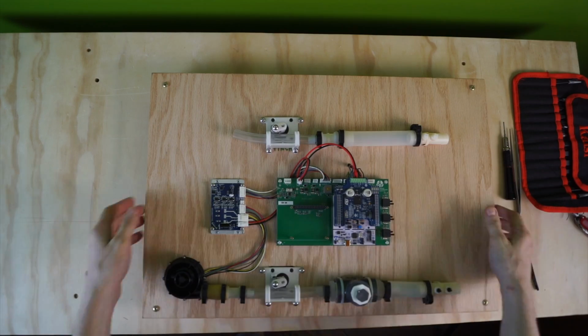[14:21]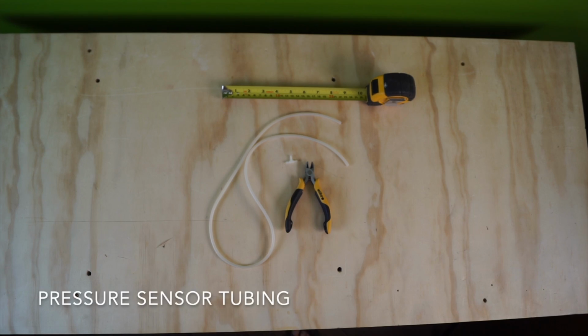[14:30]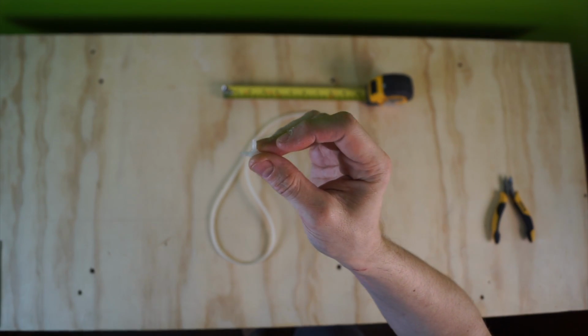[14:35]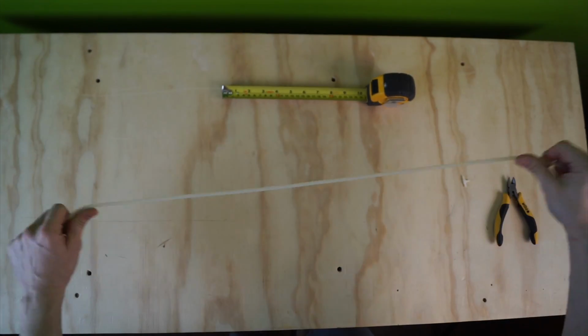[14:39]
To complete the electrical connections, Martin connects the stepper motors with their drivers on the back of the board. Now we can tidy this up. The final pneumatic connection is to run small diameter tubing from the Venturi flow sensors to the pressure sensors built into the custom board. And we'll cut it like so.
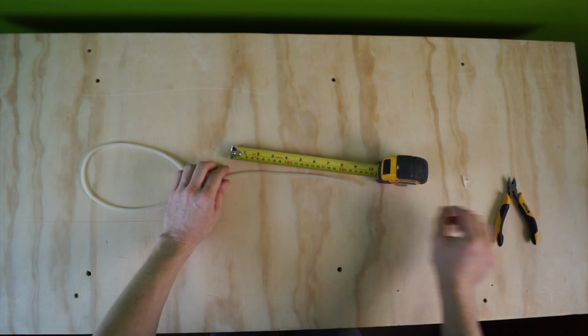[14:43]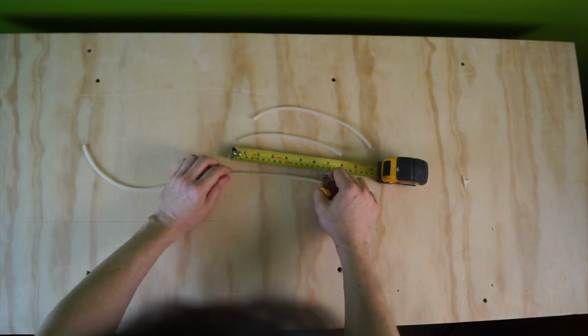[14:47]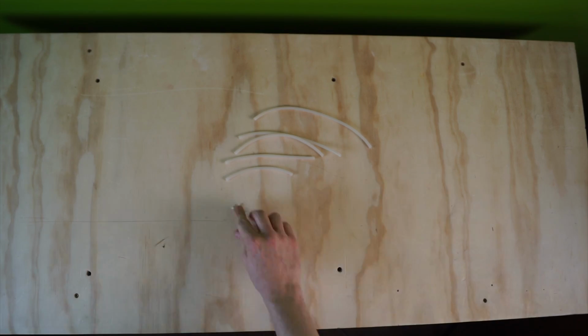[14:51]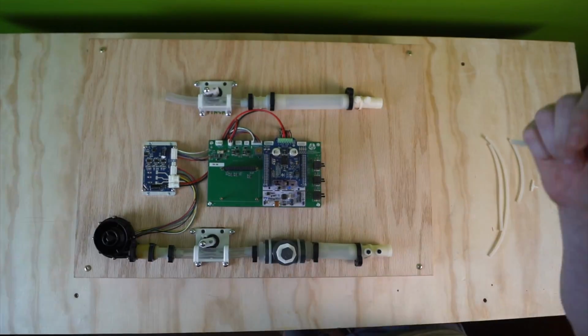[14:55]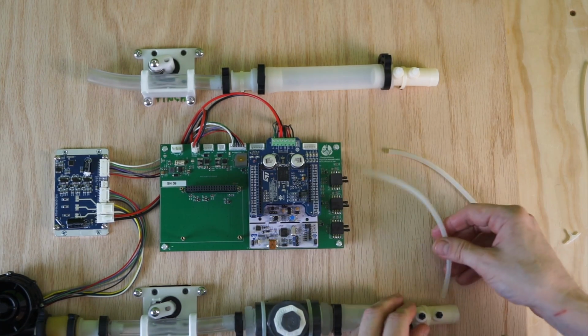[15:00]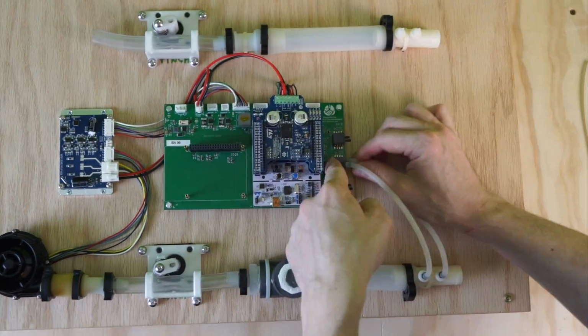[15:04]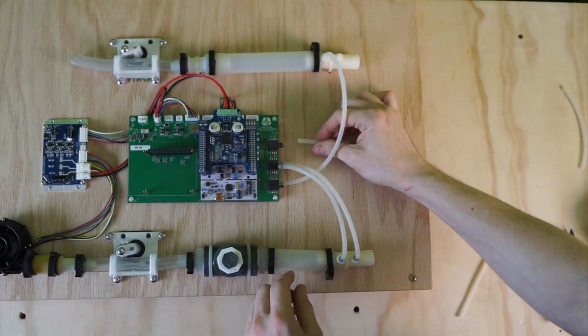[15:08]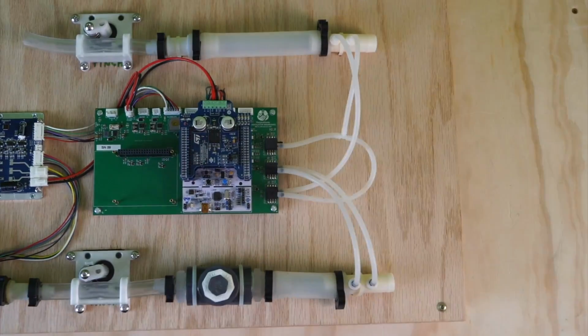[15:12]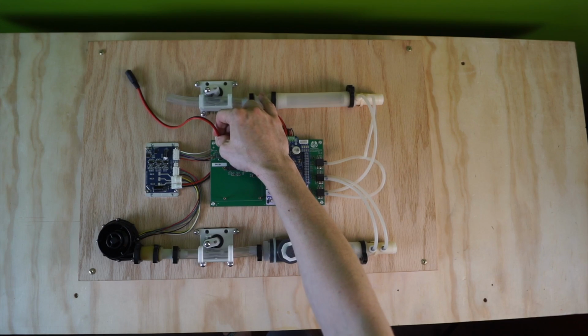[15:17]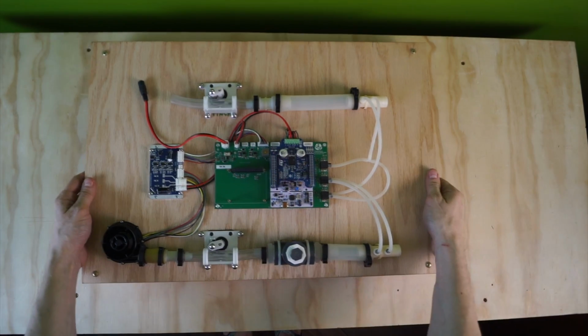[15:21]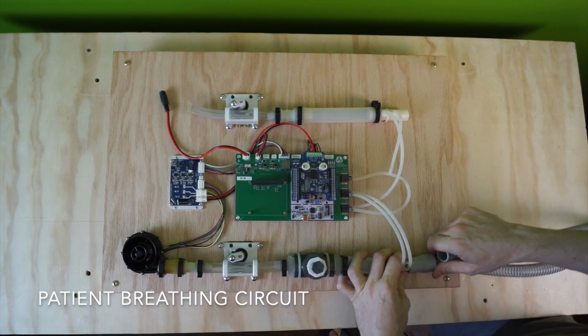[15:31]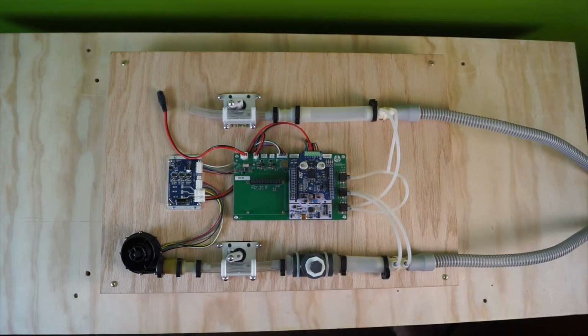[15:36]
This is the connection to the inhale. This is the power connector. And the last thing that we have to do is to connect up a test lung or whatever. Probably not a patient at this point. Maybe let's not do that.
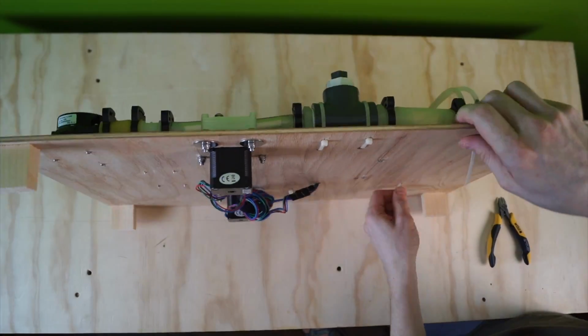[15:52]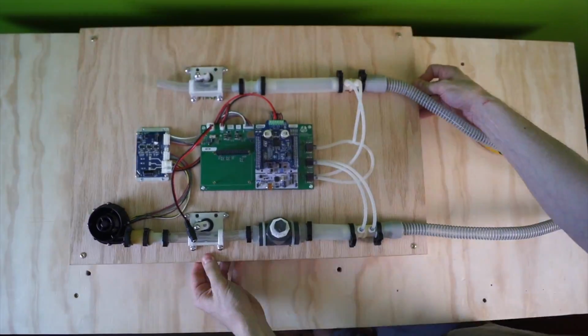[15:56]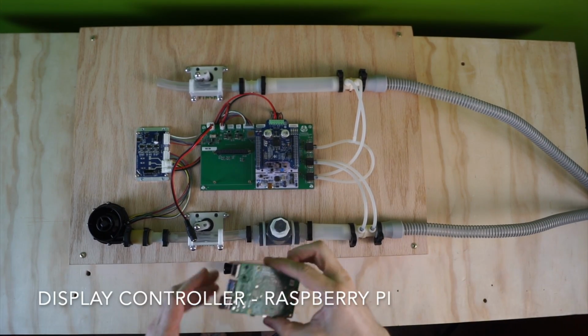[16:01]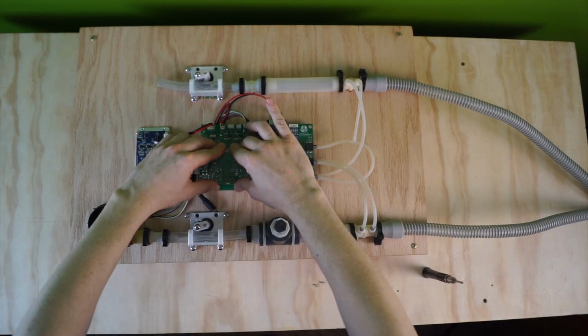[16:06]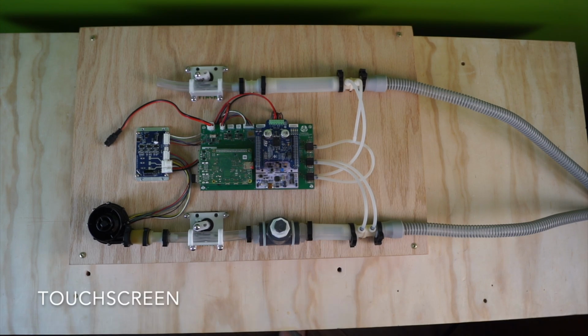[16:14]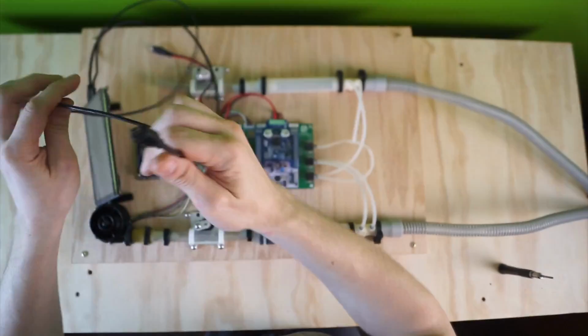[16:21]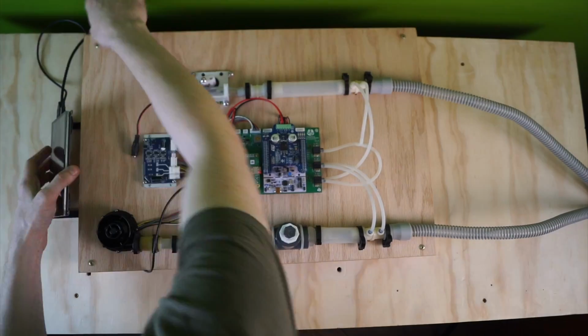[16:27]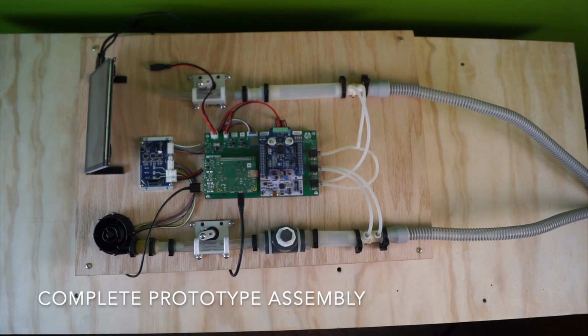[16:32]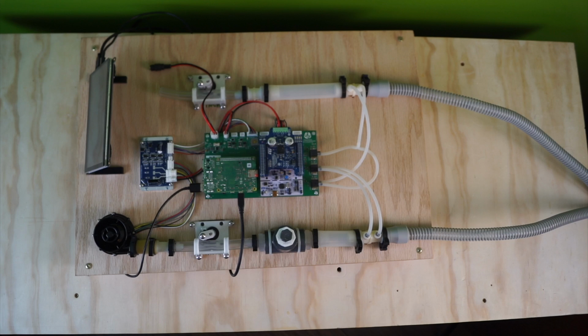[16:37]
So I had a Raspberry Pi. It's got an SD card. In this last step for the development prototype, we add a display controller and touchscreen to complete the user interface connection to the ventilator. Now we have the touchscreen. This completes the assembly demonstration for the RespiraWorks development prototype. Stay tuned for updates as we make progress towards the build of a fully packaged ventilator.